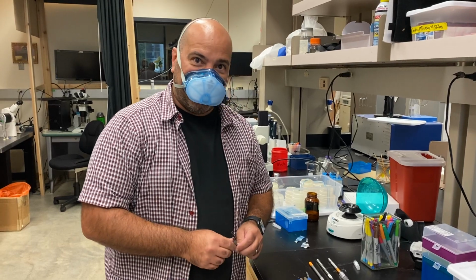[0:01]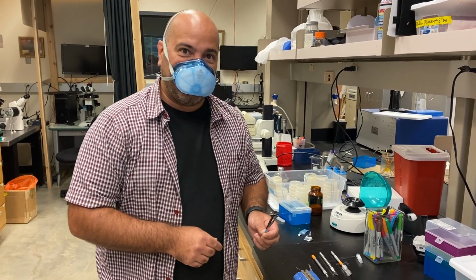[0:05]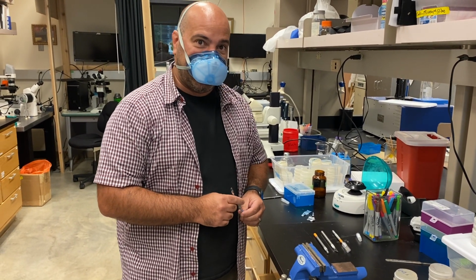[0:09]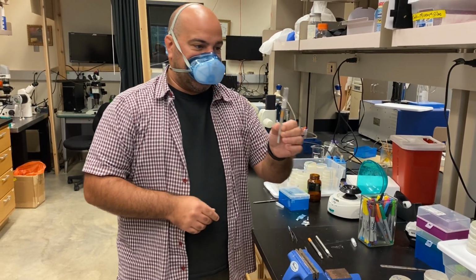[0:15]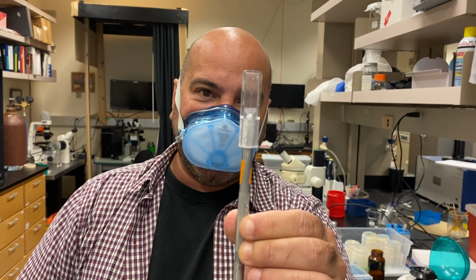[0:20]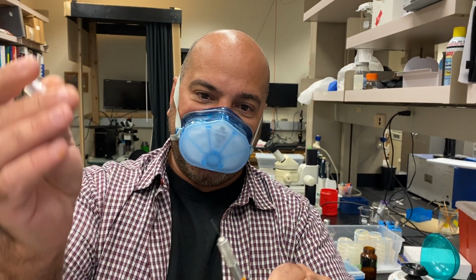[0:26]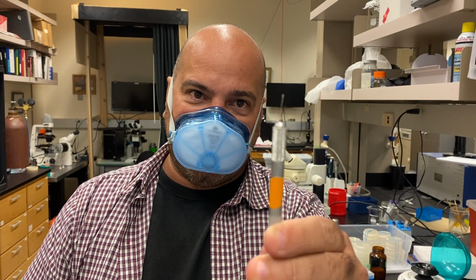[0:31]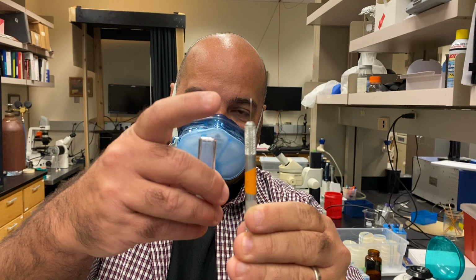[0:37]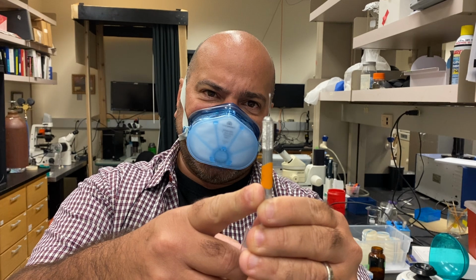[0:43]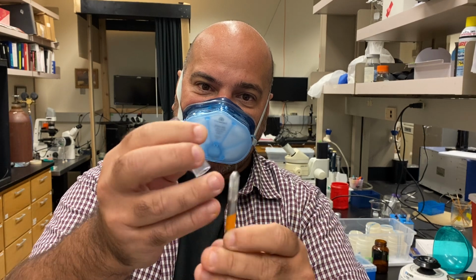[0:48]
How to quickly make worm picks. The worm picks that we're gonna make are made with X-acto knives. This is based on Paul Sternberg's Worm Gazette publication showing how to turn an X-acto knife into a long-lasting pick handle. The only thing that we're gonna show you today that's different is how to use repurposed silver wire from old electrophoresis boxes to make nice, long-lasting, sturdy picks, okay?
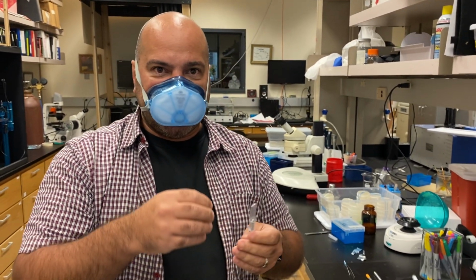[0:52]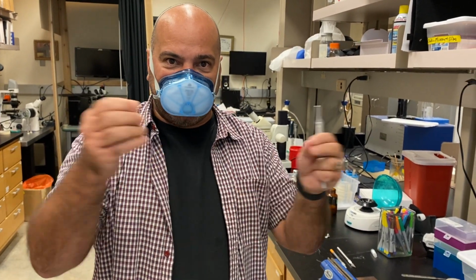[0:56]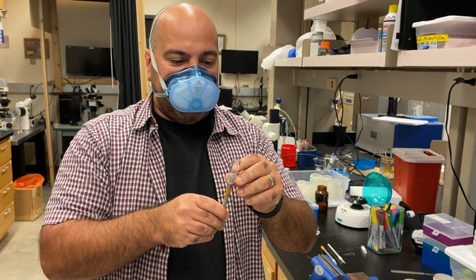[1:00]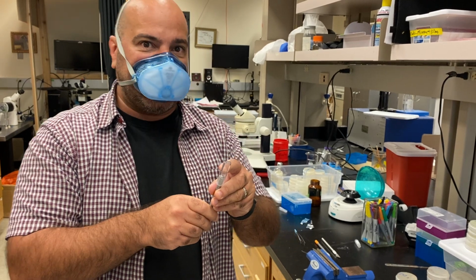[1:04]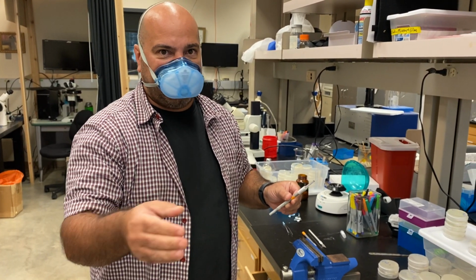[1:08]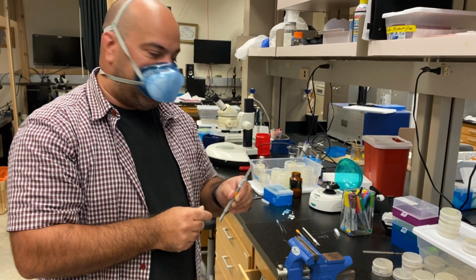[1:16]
The silver is nice because it's soft, so students can punch things with it, you can reshape it, and it won't break. It heats up very quickly and it cools down fairly quickly. It's not like a platinum wire, but if you count 1, 2, 3, it's cool enough to use. And we're gonna show you how to quickly make it so that you have a very nice flat and round tip on it, okay? So here's the stuff that we're gonna need.
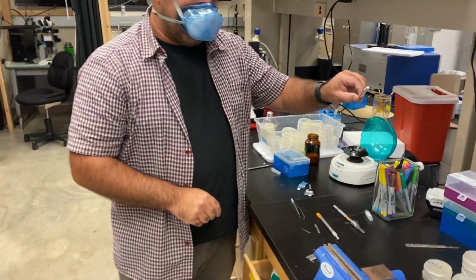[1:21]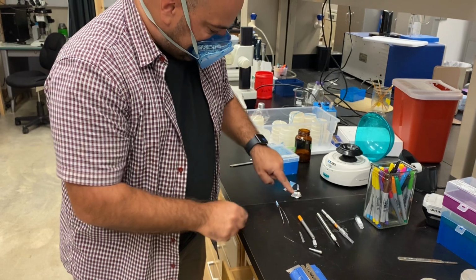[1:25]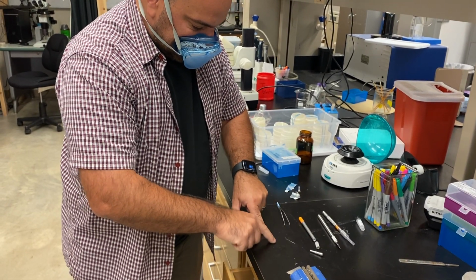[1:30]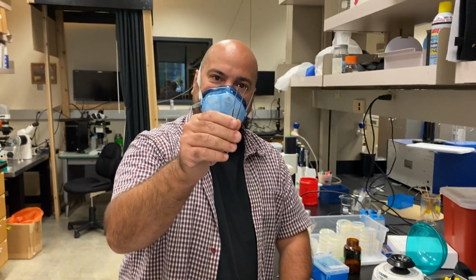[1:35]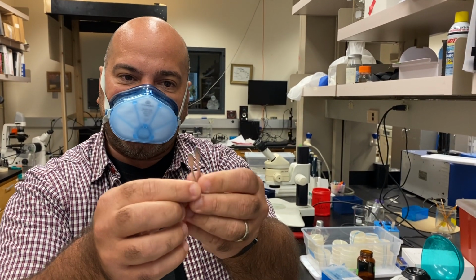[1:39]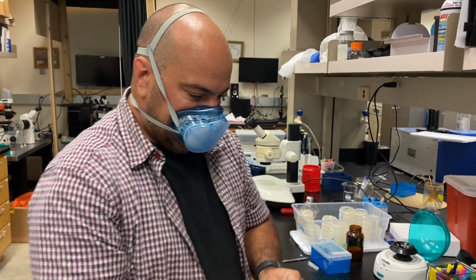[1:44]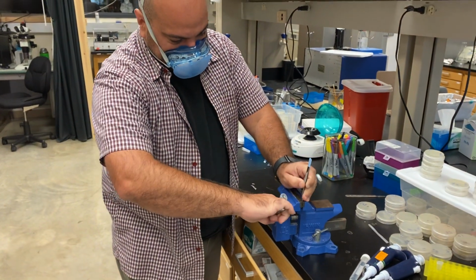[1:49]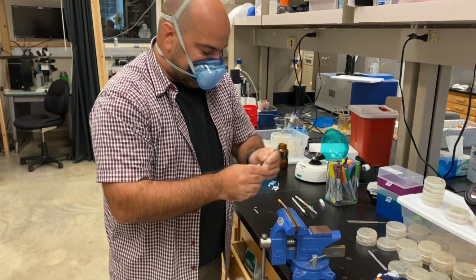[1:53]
We need an X-acto knife that we're gonna take apart. We need some aluminum foil that I flattened with my finger, that we're gonna use to hold the silver wire. We need this duck bill forceps. Very important that they are really soft on the inside because we're gonna use them to squeeze the silver, okay? And the other thing that we need is a vise, which we got in our lab, in order to squeeze the wire in there, and that's gonna make that flat surface.
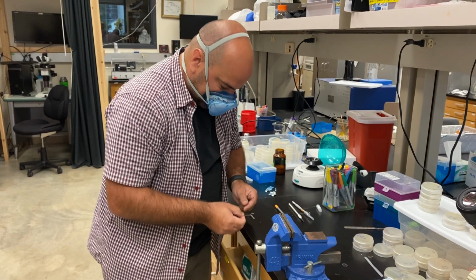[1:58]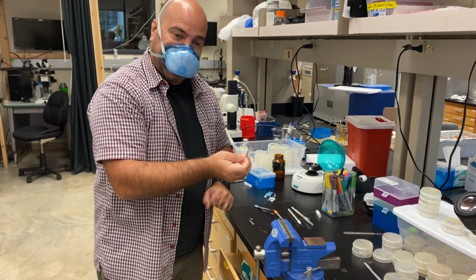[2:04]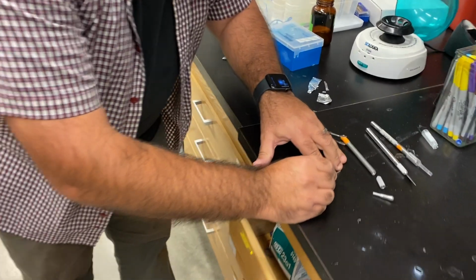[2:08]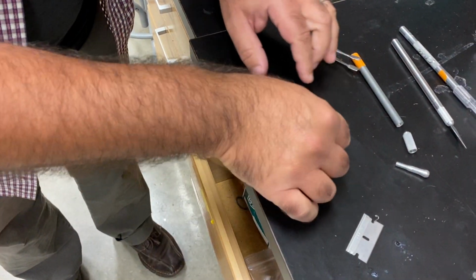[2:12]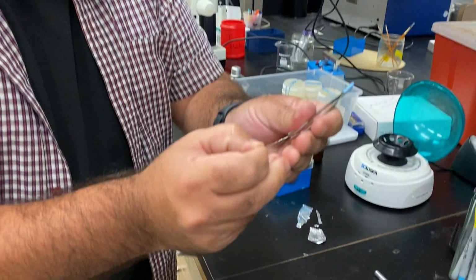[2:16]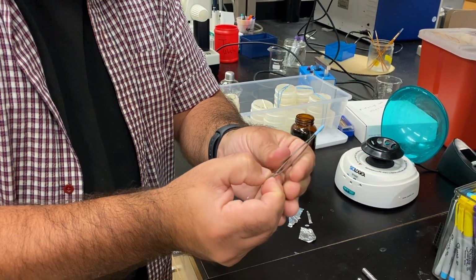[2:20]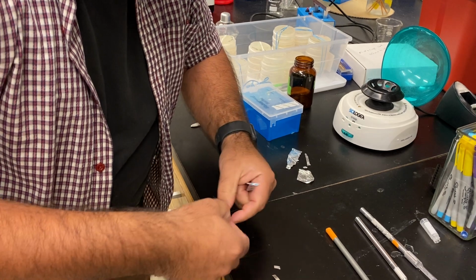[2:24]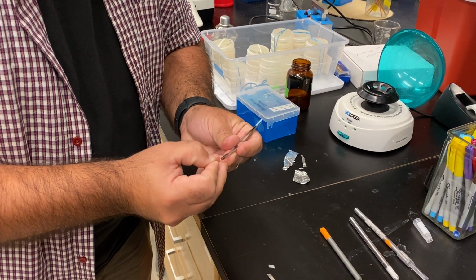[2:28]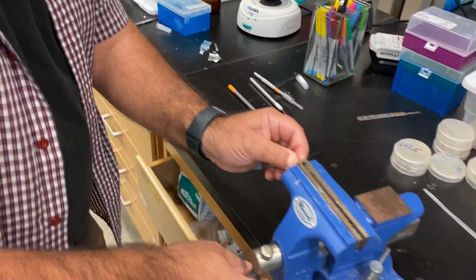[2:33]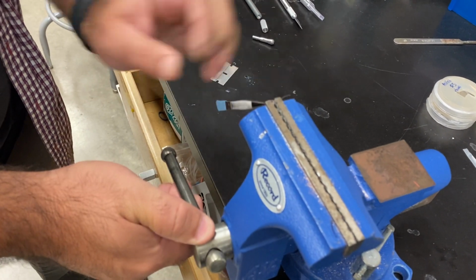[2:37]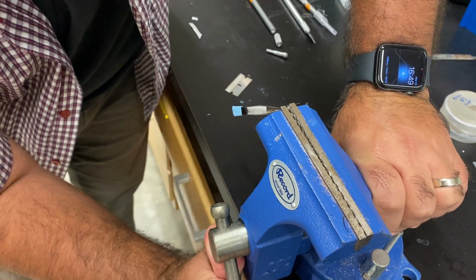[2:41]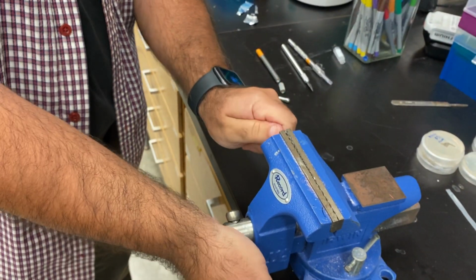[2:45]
So I have here a piece of silver wire from an electrophoresis box, and I'm just gonna cut the end of it, can you see, just to get a nice flat end, okay? The next thing I'm gonna do is hold that with my forceps. Okay, and I'm gonna take this to the vise, grab it, and now I'm just gonna crank this thing as hard as I can, okay? And now I'm gonna release it.
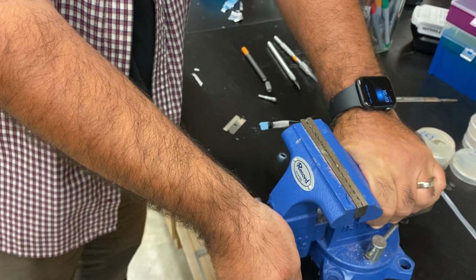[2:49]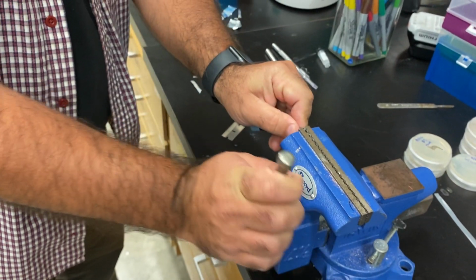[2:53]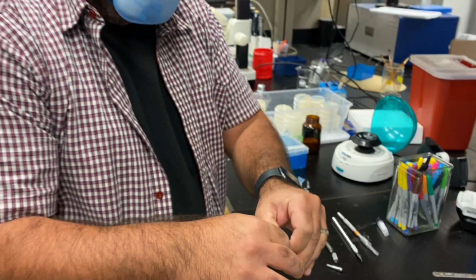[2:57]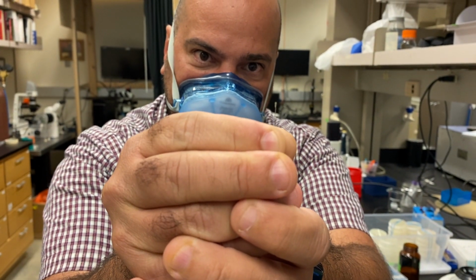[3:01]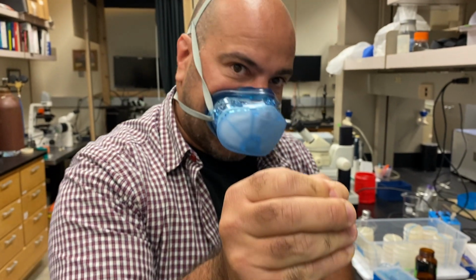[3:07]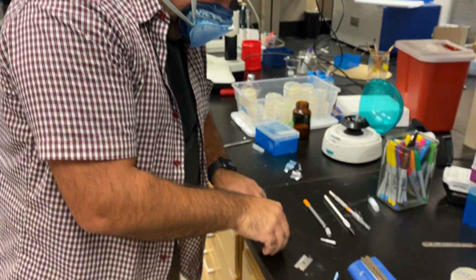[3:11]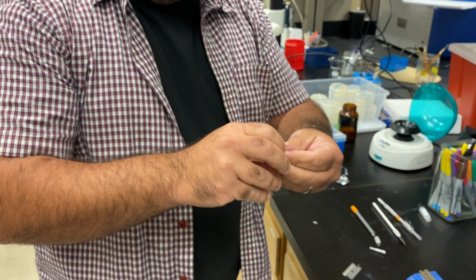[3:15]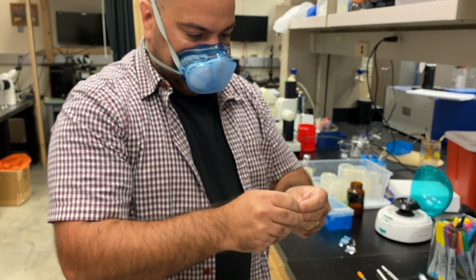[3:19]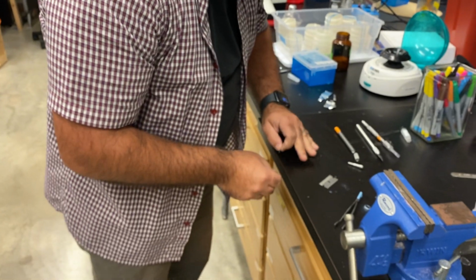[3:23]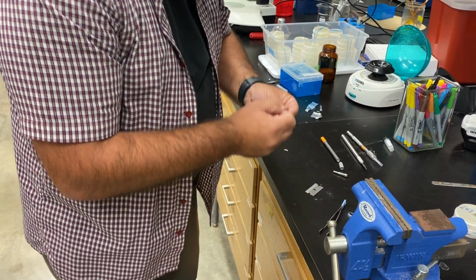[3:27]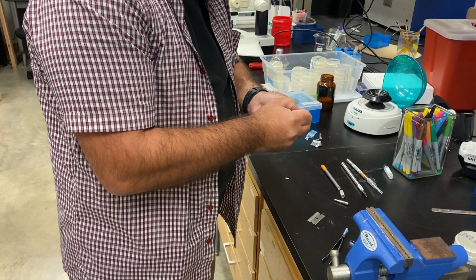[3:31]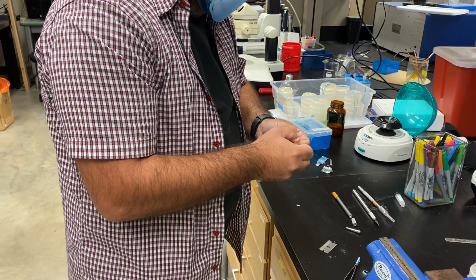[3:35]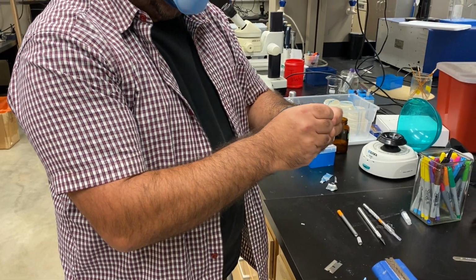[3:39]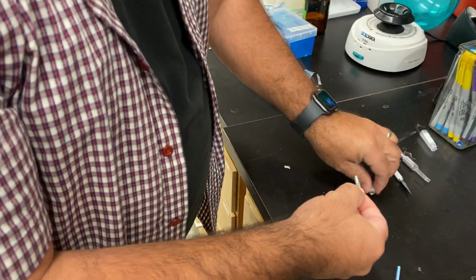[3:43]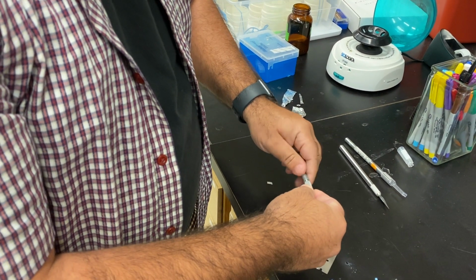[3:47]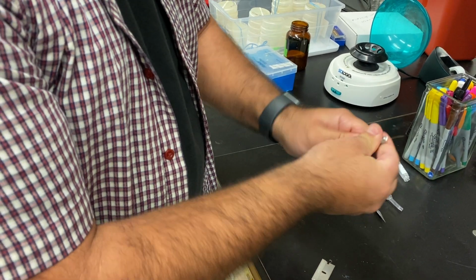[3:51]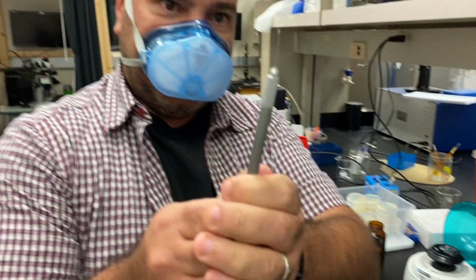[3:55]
And that's the tip. The nice thing about this is it makes it perfectly flat and round, so there are no sharp edges to hurt the worms. And so now we're just gonna fold this aluminum paper to make like a little sandwich thing so that we can hold this wire with it, and that goes into the hole on the blade there. Just put it in there. Tight. Voila. All right. So that's the pick.
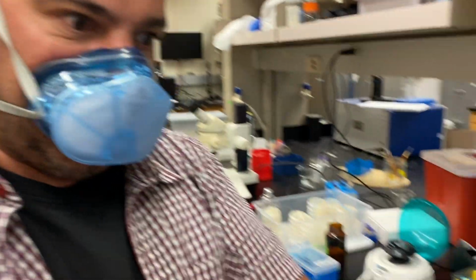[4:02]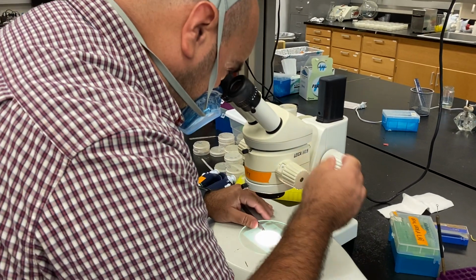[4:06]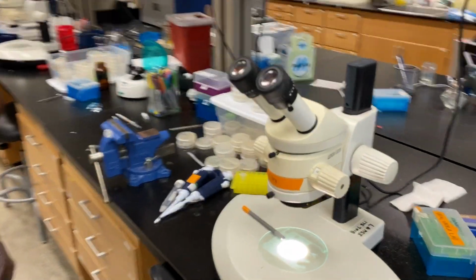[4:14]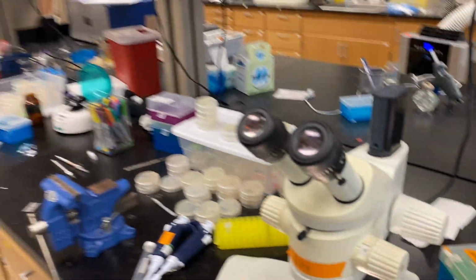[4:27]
I'm gonna put it in the microscope. And either we take a picture with this phone right now, or I'm gonna upload a picture of what this looks like. I don't know if you can try and see through there. That's it, that's all there is to it.